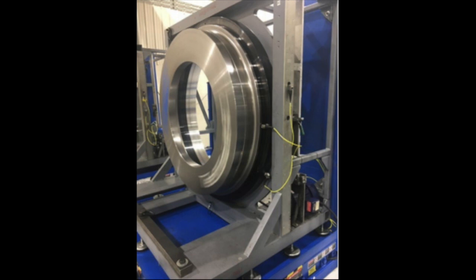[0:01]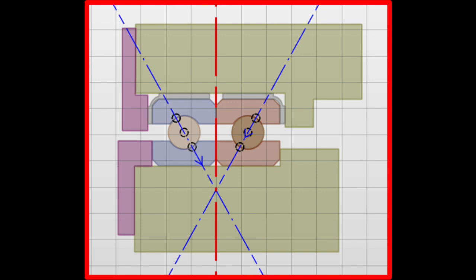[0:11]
This is the assembly of a sound-damped MRI bearing by Balint, Jerica Fischer, Matthew Guy, and Alex Harpst. Our senior design project partnered with SKF and focused on investigating the feasibility of the assembly process of a pre-designed rubber liner that would induce an interference fit between an MRI bearing and its housing.
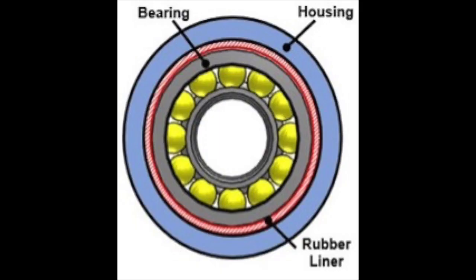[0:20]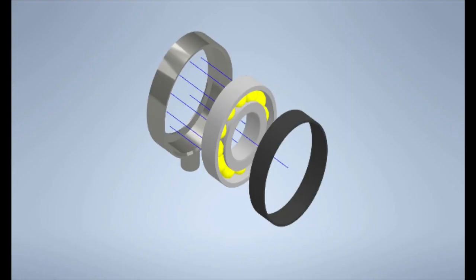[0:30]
MRI bearings range anywhere from 37 inches all the way up to 65 inches, meaning we first had to devise a small-scale assembly to perform our tests. We ultimately created a housing that 6-inch bearings could be pressed into, equipped with an attachment point for the material testing machine after assembly.
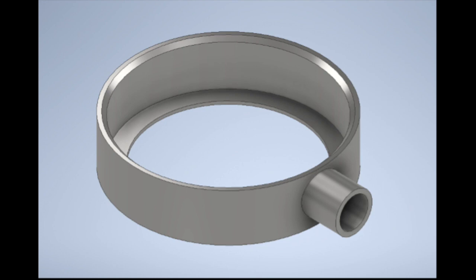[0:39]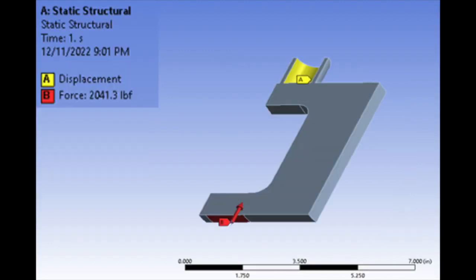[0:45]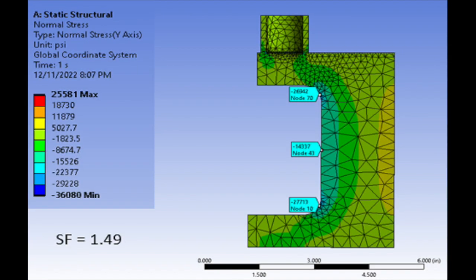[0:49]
To begin, we used FEA software to simulate the assembly process, including stresses on the housing and deformations, which could be issues later. This allowed us to develop the best assembly process to reduce interferences during assembly and ensure a consistent spring constant
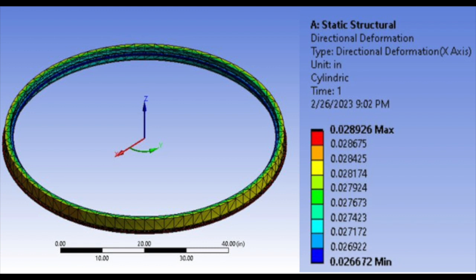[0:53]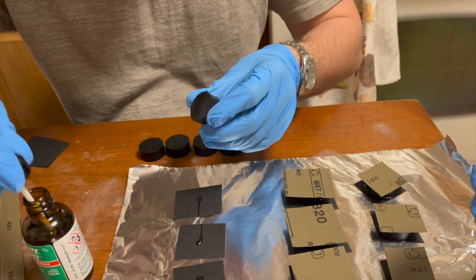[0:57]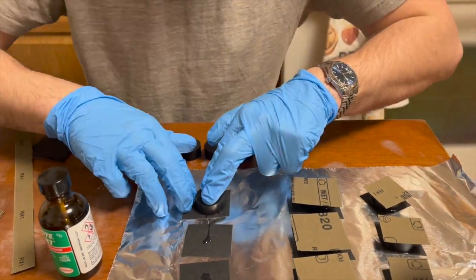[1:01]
in the assembled bearing. We also conducted material testing to identify the best lubricant and adhesive and ensure compatibility with the rubber. These tests also helped us determine which products offered the most optimal material properties, like low friction coefficient
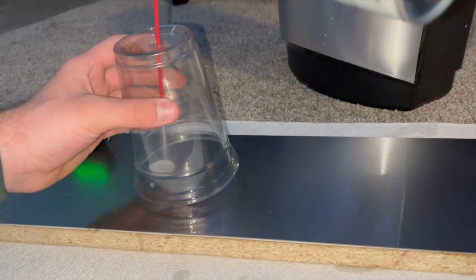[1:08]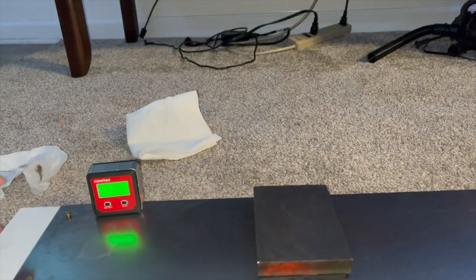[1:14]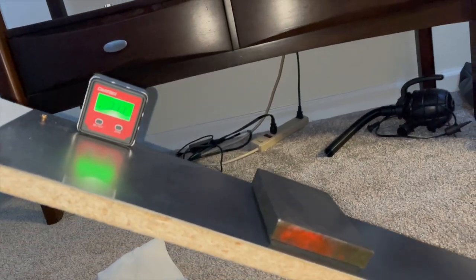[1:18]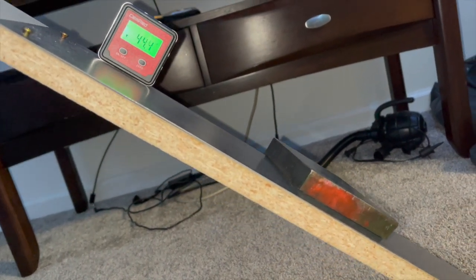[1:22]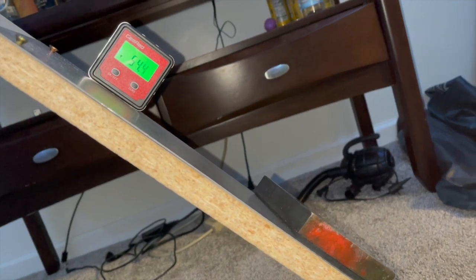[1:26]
and high bond strength. The friction testing consisted of a steel sheet to replicate the bearing housing attached to a backer for more support. The rubber was glued onto a steel block and then placed on the board, which was lifted at an angle until the rubber slid on the steel. From there, a simple calculation would tell us the friction coefficient and thus the assembly force required. This process was repeated with and without lubrication.
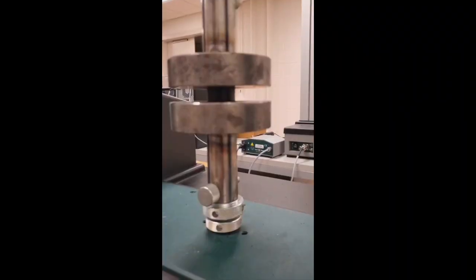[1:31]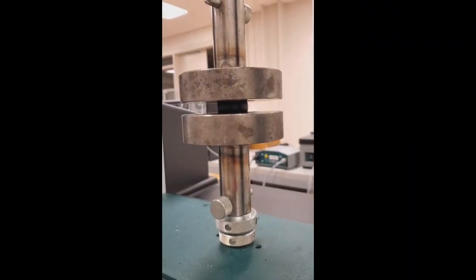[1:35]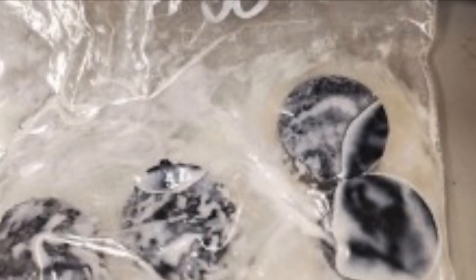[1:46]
Another test was the rubber compatibility test, which involved soaking the rubber pucks in our chosen lubricants and adhesives to make sure these assembly consumables did not vary the rubber's properties in an unpredictable way. The material property tested was compressive modulus at 10% compression. This also gave us an interference pressure for the force calculation.
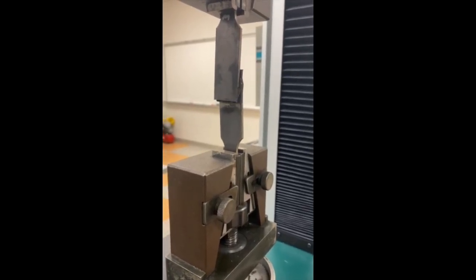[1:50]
The lap shear test determined which adhesive was the strongest by applying the adhesive to the rubber and 2 steel plates and pulling until failure. A high failure load as well as failure in the rubber was a good indication of adhesive strength.
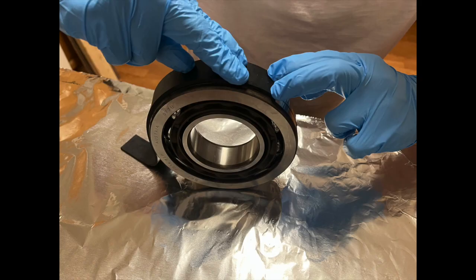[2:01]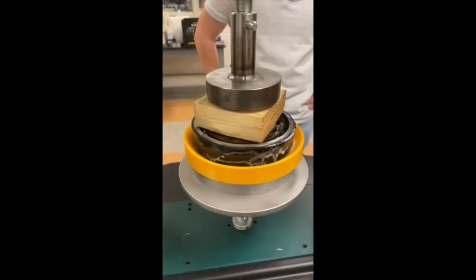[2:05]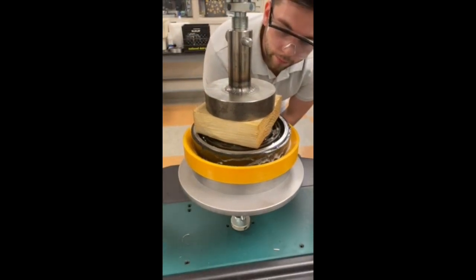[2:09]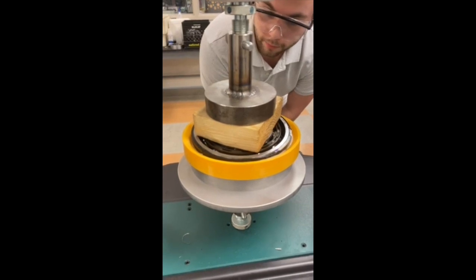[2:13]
After identifying the best lubricant and adhesive, we installed the rubber liner using the press fit method, which involved our designed small scale housing and an arbor press. Our chosen lubricant was a Dixon P80 and our chosen adhesive was a Loctite 495 adhesive.
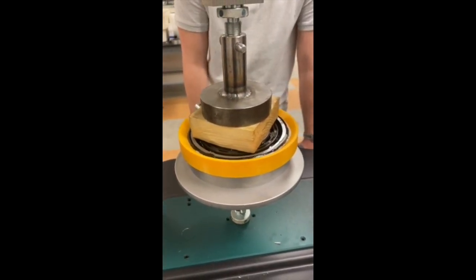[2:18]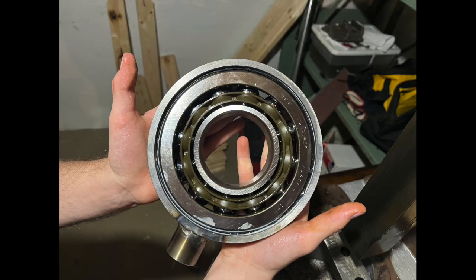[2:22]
Once the small-scale bearings were assembled, we proceeded to the post-assembly testing phase. During the testing phase, we measured the spring constant of the assembled bearings to ensure that it was consistent and within required range. We aimed for a low variance in the spring constant to ensure that the bearing operates effectively
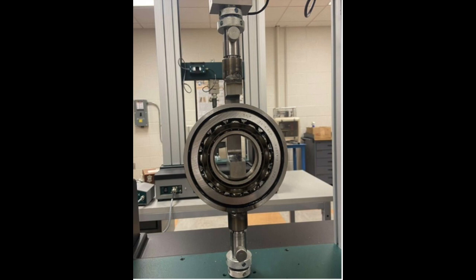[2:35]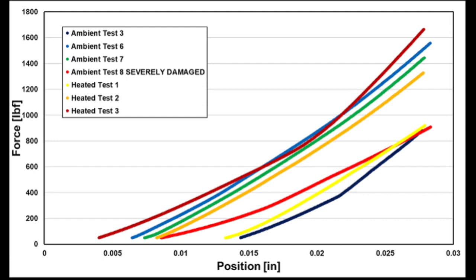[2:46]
and efficiently. Finally, we considered heating the outer housing of the bearing, which would make it expand and in theory could remove any interference altogether, thus negating the need for a lubricant. In the end, we decided this would be the most consistent and best method for assembling the bearings.
We recommend using thermal blankets to heat the outer housing to 200 degrees Fahrenheit, at which point the bearing and adhesive bonded rubber can simply drop in without any resistance. This process addition should not incur major cost or labor additions to SKF's current system, and as the bearing housing cools down, it will simply contract and mechanically lock the bearing in place.